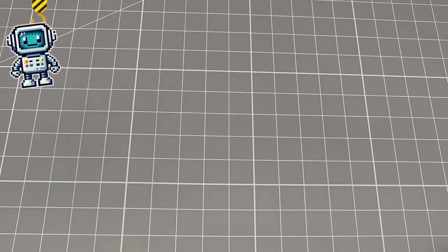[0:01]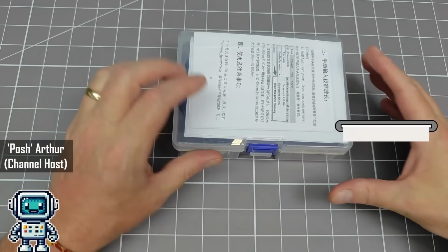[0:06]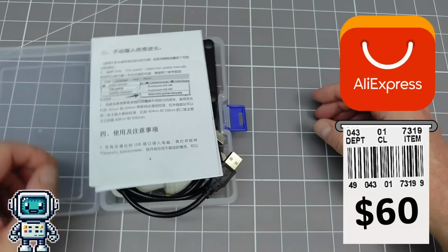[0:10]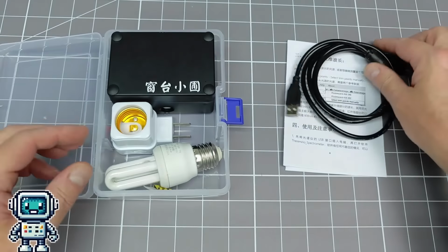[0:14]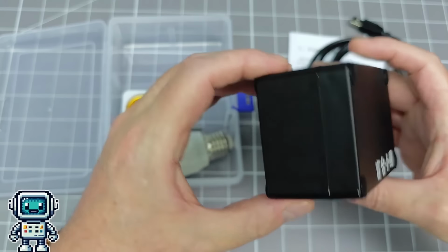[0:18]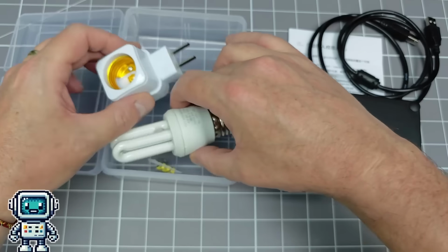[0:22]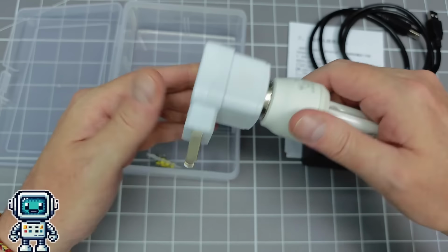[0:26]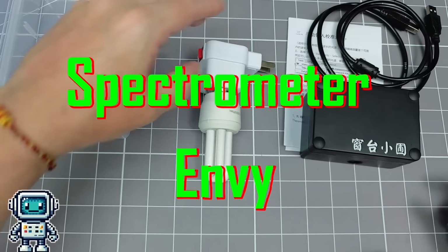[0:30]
This is a $60 optical spectrometer, and is available on AliExpress. We have extensively tested this device, and it can outperform products that cost 10 times as much. But, to be honest, it isn't exactly the most beautiful thing on the planet. And we found ourselves suffering from a certain amount of spectrometer envy.
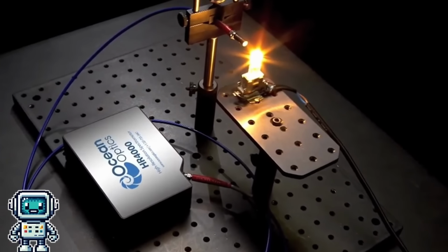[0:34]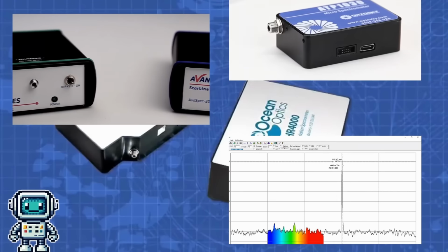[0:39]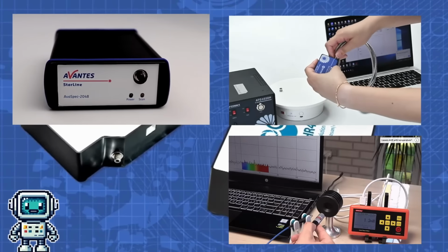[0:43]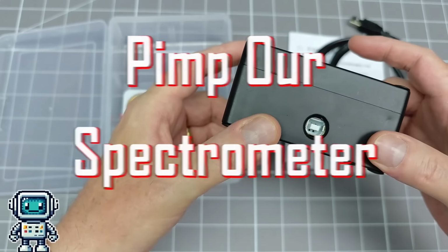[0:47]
We all know it's wrong, but that didn't make us feel any better. So we decided to do something positive about it. Instead of spending a king's ransom to buy a flashy new device, we decided it would be better to pimp our spectrometer. Okay, let's crack on with this.
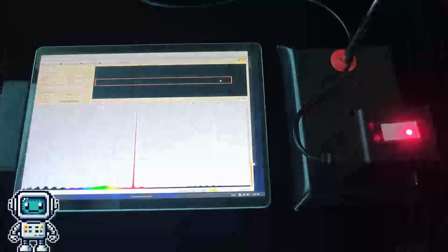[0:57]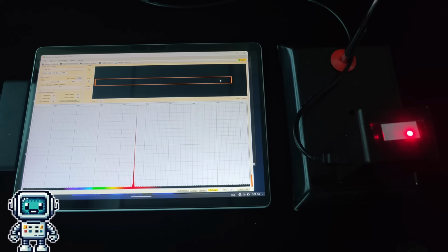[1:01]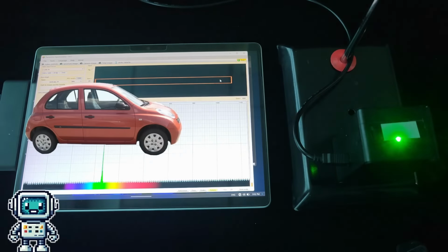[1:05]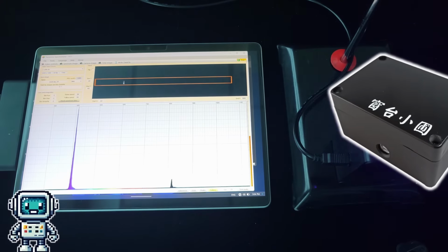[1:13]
The aim here is to try and improve the functionality, and perhaps even the performance of this spectrometer. This is not just a case of putting a supercar body kit onto a Nissan Micra, we actually want to make this device more useful. That said, it really won't hurt to make it look less like a boring old black brick.
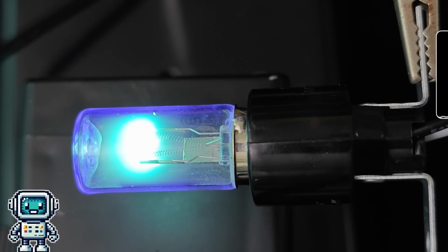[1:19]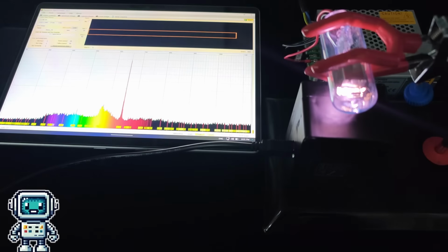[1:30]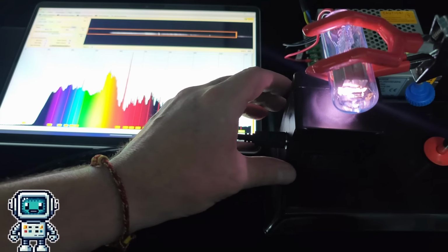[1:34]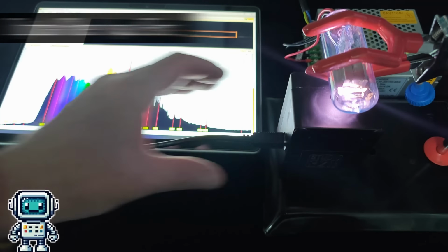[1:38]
If you have not already done so, we suggest that you watch the previous videos we made about this super cheap spectrometer. There is a lot of information in those that will help to make this video make more sense. First, let's start with adding an optical fiber input port.
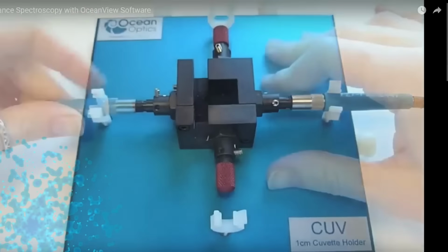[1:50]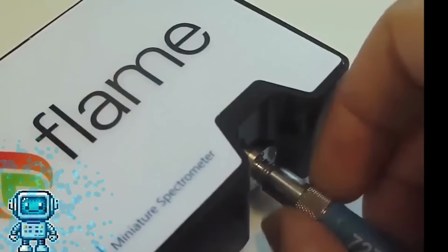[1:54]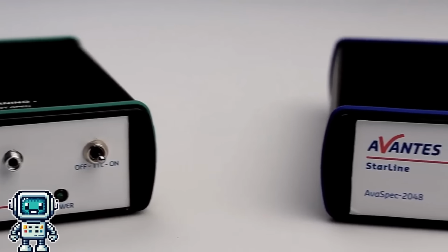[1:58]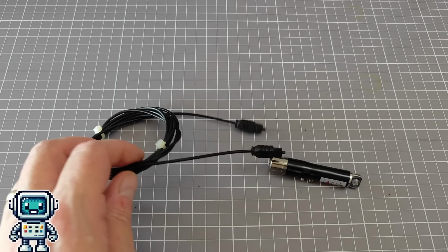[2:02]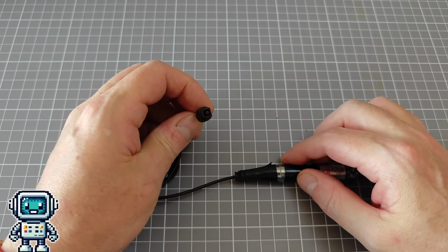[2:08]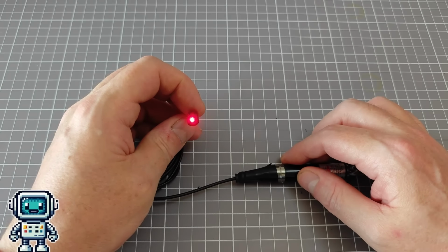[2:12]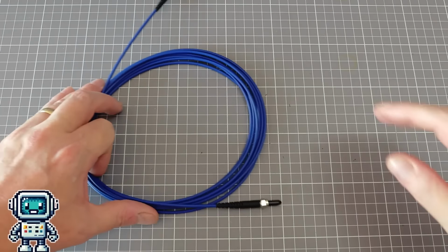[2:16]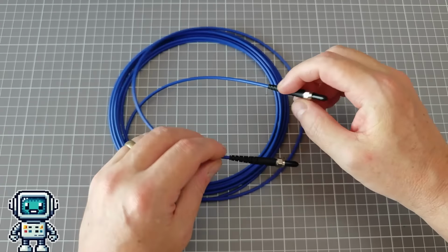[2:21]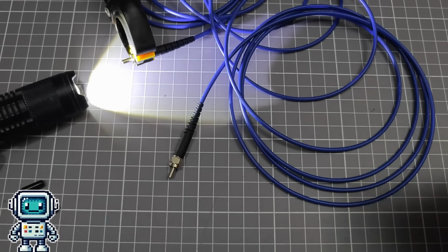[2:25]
Usually, small professional spectrometers use an optical fiber input. This means that you don't need to move the entire spectrometer to the source of light you want to measure. Here, you can see how this low-power laser beam is carried down this cheap light pipe, a type that is used for digital audio. For spectroscopy, we need to use higher quality optical fibers, ones that can handle the wide bandwidth of the instrument, such as this one.
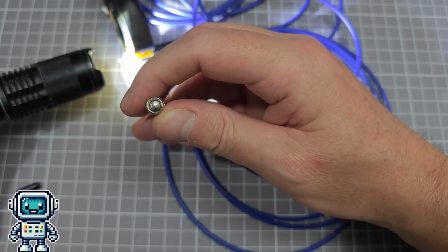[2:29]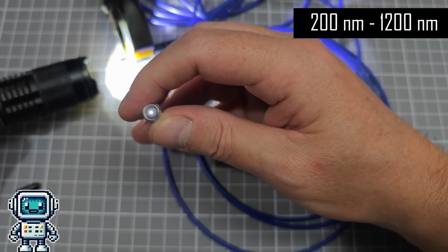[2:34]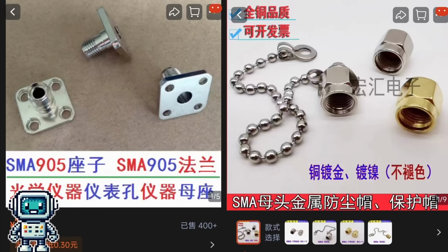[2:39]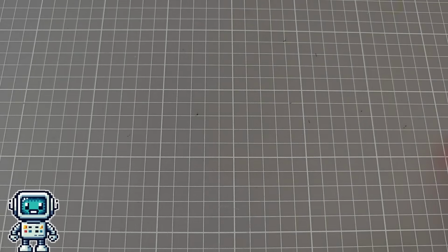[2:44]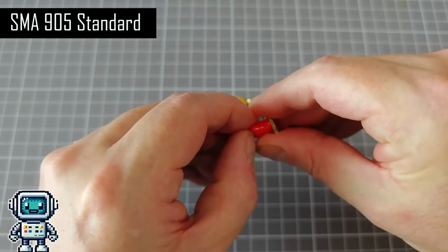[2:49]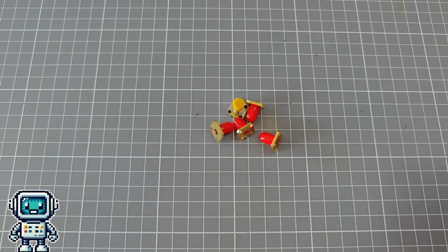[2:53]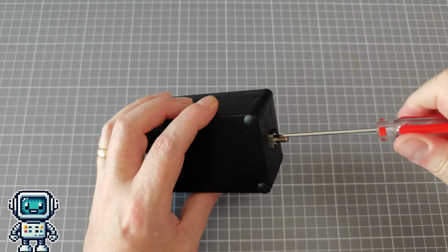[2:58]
This was actually the most expensive component we purchased for this project, and it has a usable bandwidth of 200 to 1200 nanometers. We also bought some special receptacles to allow the fiber optics to be connected to our spectrometer. We are using the SMA905 standard for this, it seems to be the most common interconnection standard used for this application. Fitting one of these connectors to the front of the spectrometer could not be easier, just drill four small holes, and then screw it to the enclosure.
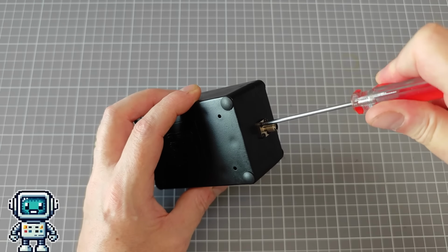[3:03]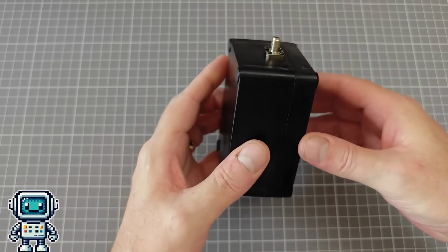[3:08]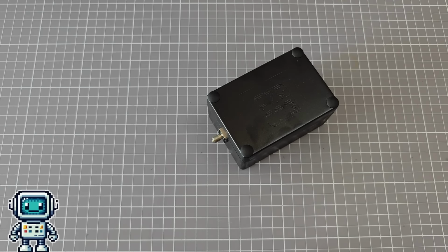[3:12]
We are not going to delve into this too deeply, because later we made a change to the actual enclosure, so let's park this here, and move on to the next upgrade we made.
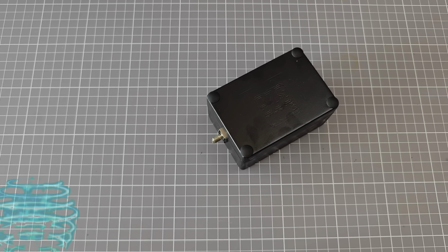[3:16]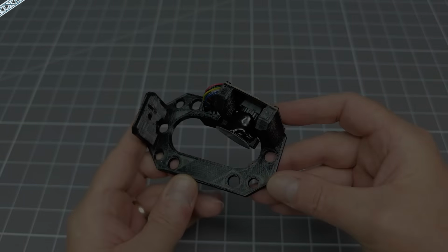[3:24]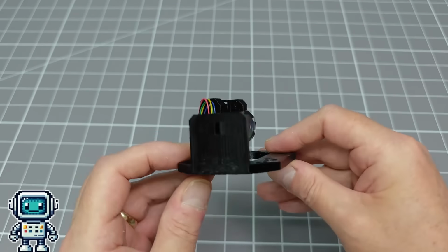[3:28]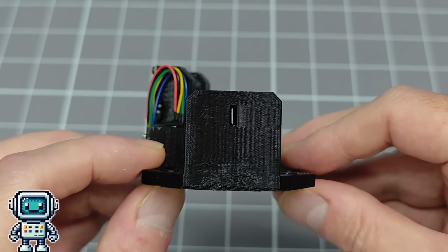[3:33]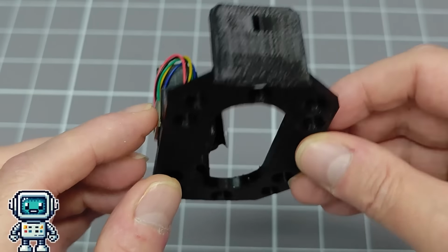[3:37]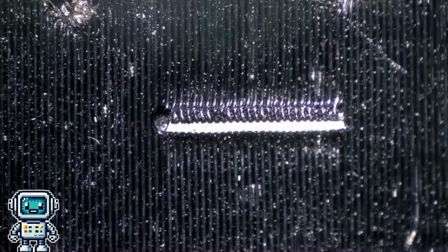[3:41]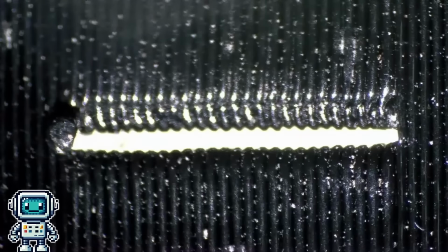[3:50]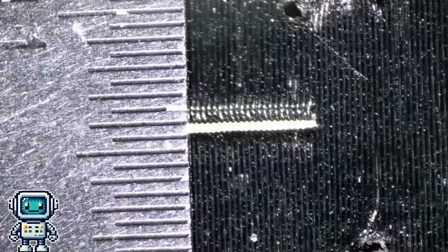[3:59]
Almost all spectrometers need to have an optical slit. In this case, it is 3D printed into the chassis of the spectrometer itself. If we zoom in on the optical slit with a microscope, we can see that there is quite a lot of unevenness due to the basic properties of the 3D printing process. This optical slit width can determine the optical bandwidth of the spectrometer, at least, it can, until you hit the limits imposed by the inherent point spread function.
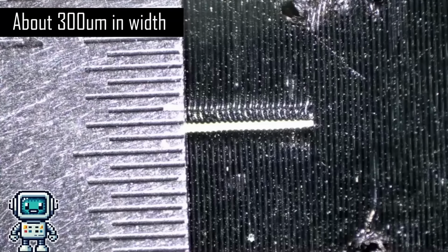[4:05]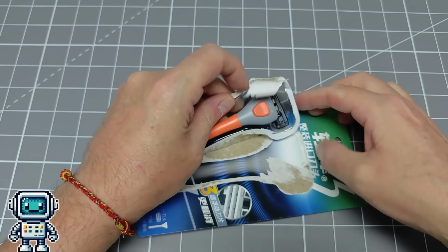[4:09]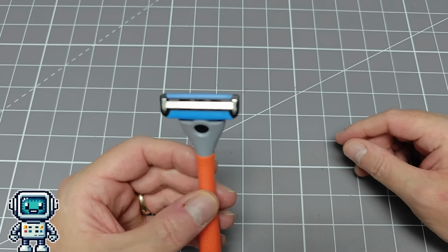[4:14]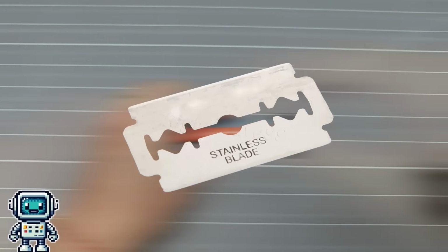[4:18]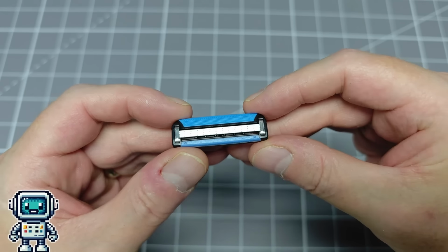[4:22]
The 3D printed optical slit is about 300 microns in width, so we wanted to make something that was a little narrower, and with straighter edges. Normally, this can be done with a pair of razor blade edges. We can't buy those types of old-fashioned razor blades here in China, so we thought we would try using the blades from a disposable razor.
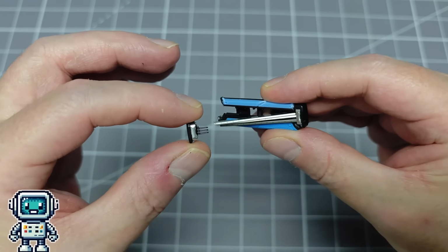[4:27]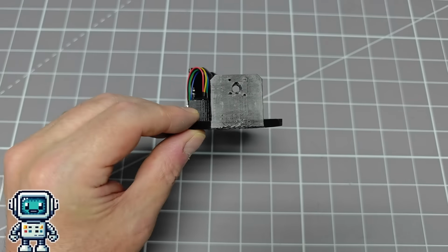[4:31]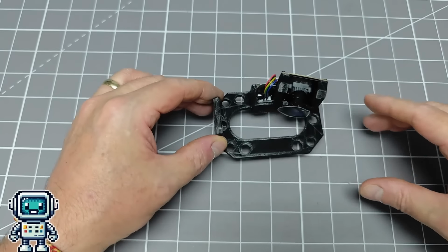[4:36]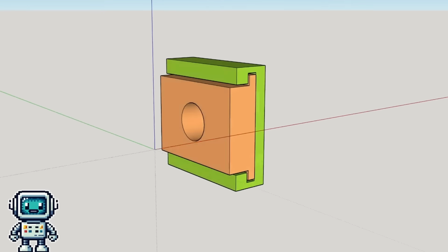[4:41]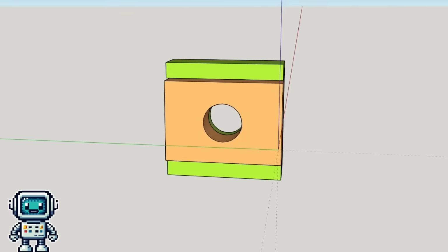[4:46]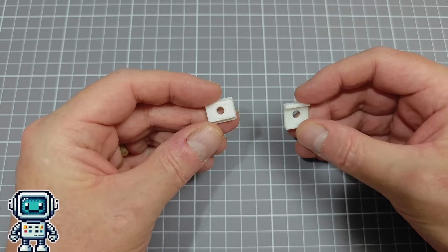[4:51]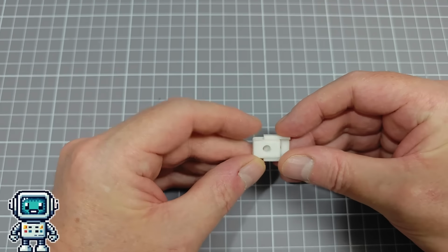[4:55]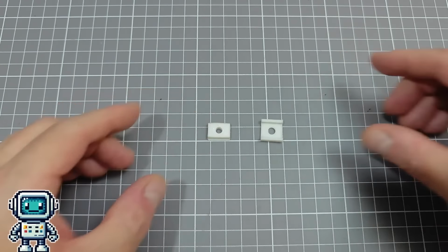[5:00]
So, after removing the blades from the razor, we got on and drilled out the old 3D printed slit. We figured that we would make a special slit holder to allow it to be correctly aligned after assembly. The green part is permanently attached to the spectrometer chassis, and the orange part has the custom slit attached to it. In this way, the alignment can be adjusted. We have read that when using optical fiber inputs, the optical slit is often unnecessary, and this arrangement allows it to be removed altogether.
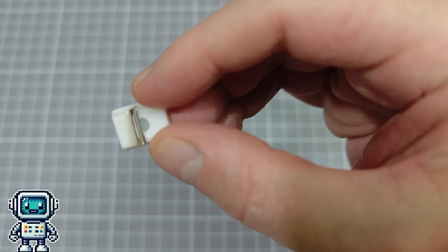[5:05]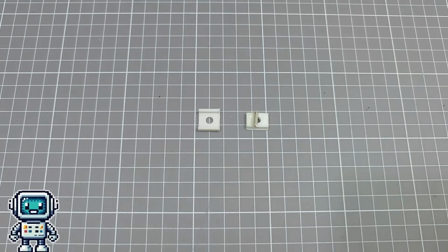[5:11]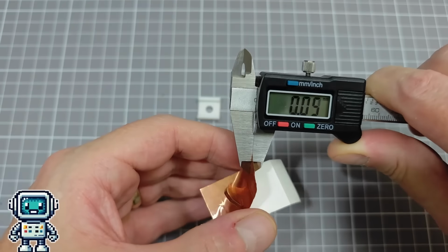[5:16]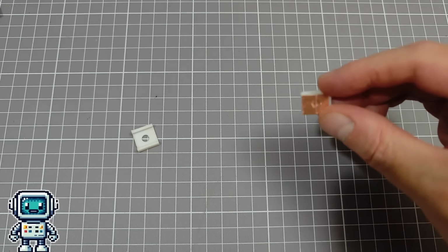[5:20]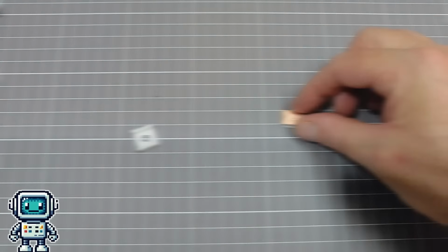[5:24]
It was at about this point that we realized that we had screwed up. Disposable razor blades were never going to work, and actually, there was a far easier way to do this. So, we have used 50 micron copper foil to create the optical slit. It has a self-adhesive backing and is really easy to fit. The new slit is about 200 microns in width, and although the edges are not perfect, it is better than the original 3D printed version.
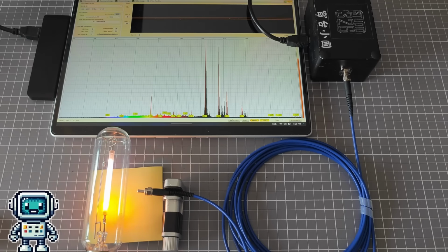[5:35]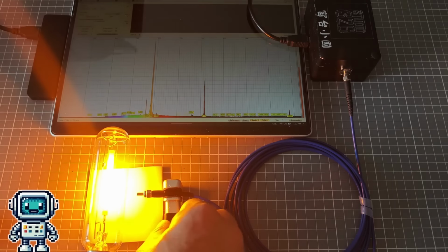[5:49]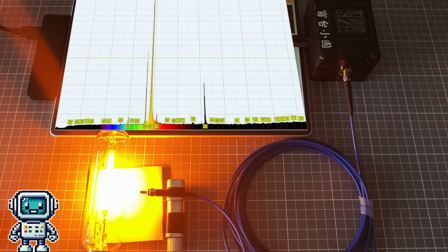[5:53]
We decided to test this upgrade with our sodium lamp, as a test source. We wanted to see if there was any improvement in resolution of the spectrometer using this new optical slit. We have made measurements on this lamp many times before, using this spectrometer. So we have lots of data to compare with.
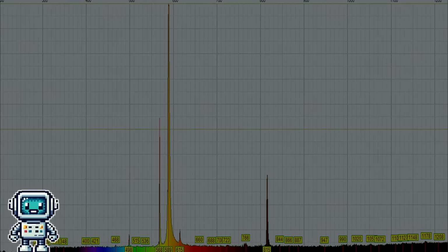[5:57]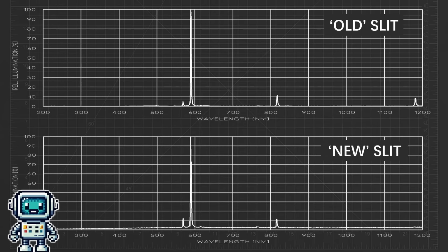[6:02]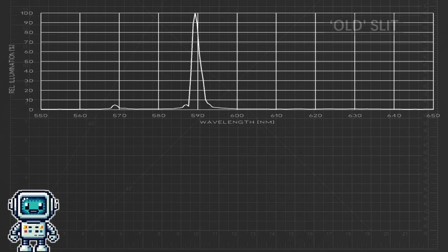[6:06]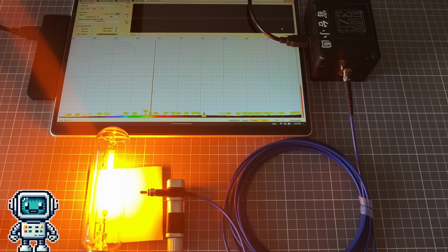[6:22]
If we look at the spectral data from the old slit and the new one, we cannot really discern any noticeable difference. But if we zoom in on the two sets of data, in the new graph, we can see a slight dip in the sodium peak. Perhaps this is just an artifact of something, or perhaps we are starting to see the sodium double line being resolved. Anyway, we are pretty confident at this stage, but we have not made the resolution any worse, so we will count that as a success in itself.
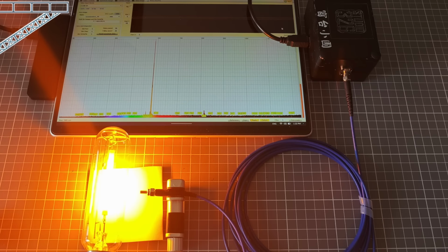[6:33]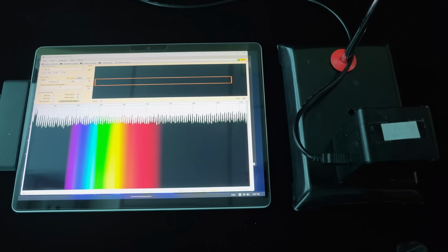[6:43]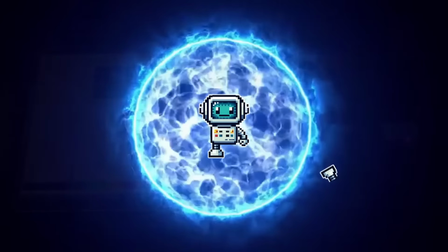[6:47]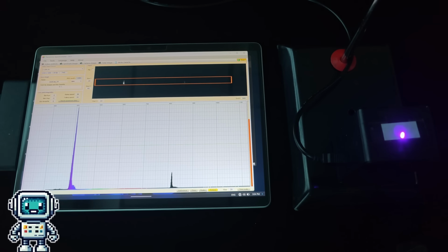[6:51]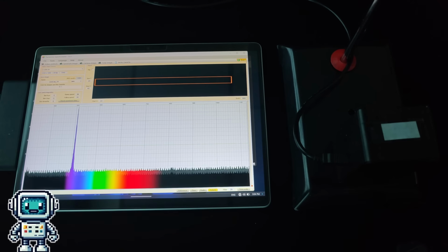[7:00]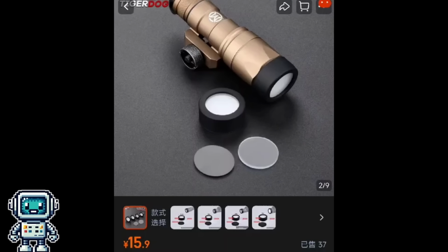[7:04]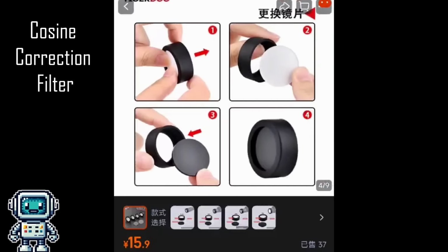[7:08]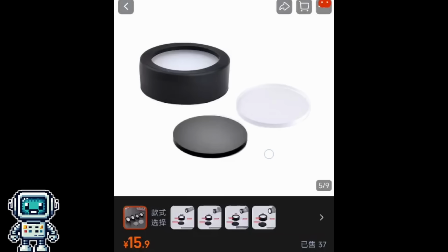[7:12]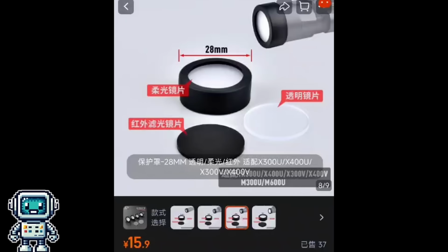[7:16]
One of the problems with measuring bright, or collimated sources such as lasers, is that they can generate many reflections within the spectrometer, and cause measurements to fail. The way to avoid this situation is to employ a cosine correction filter. This is just an overly complicated way to describe a simple diffusing layer. We found this one on Taobao for around $2. It even came with an infrared filter.
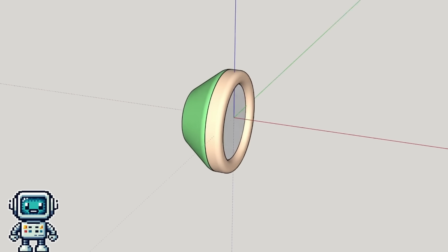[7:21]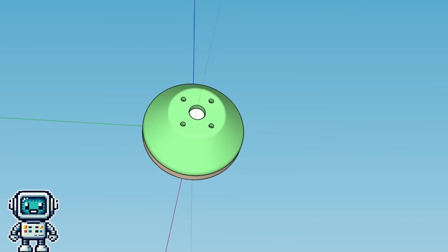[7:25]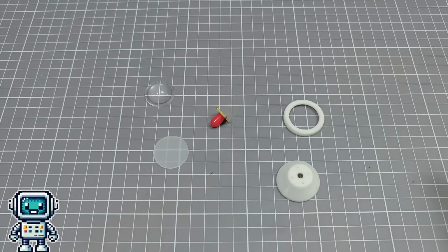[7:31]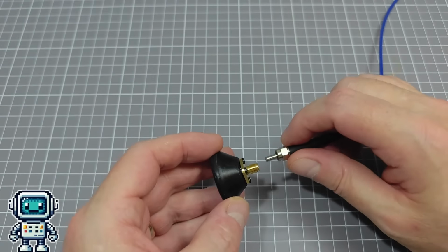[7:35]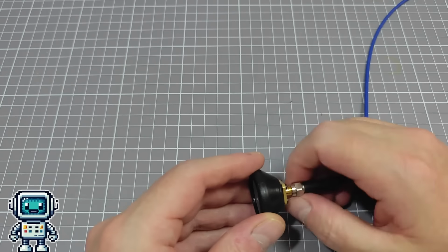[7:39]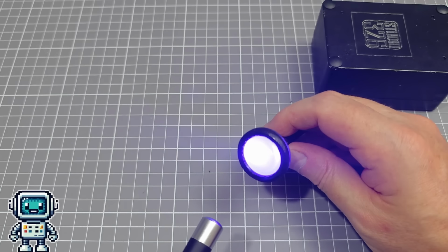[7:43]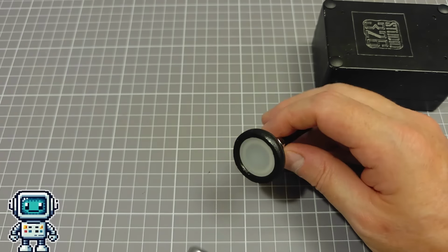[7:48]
So, we designed a simple holder for the diffusion filter, that allows it to interface to an SMA905 fiber optic connector. After printing it out, all we need to do is to paint and assemble the adapter. So, now we have our very first fiber optic spectrometer accessory. This one is ideal for measuring strong visible sources like lasers or bright lamps.
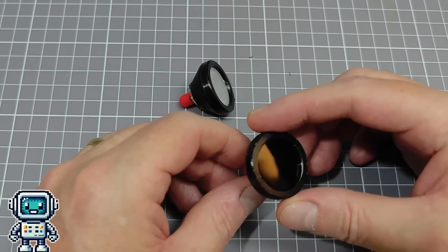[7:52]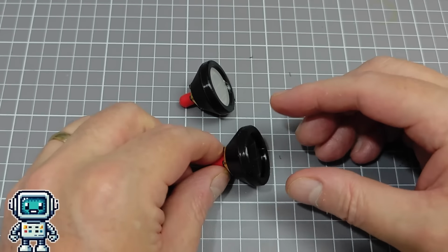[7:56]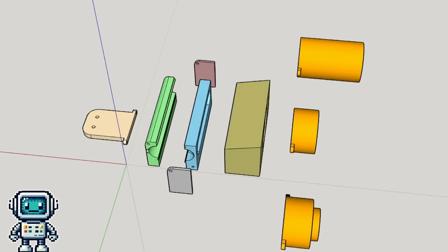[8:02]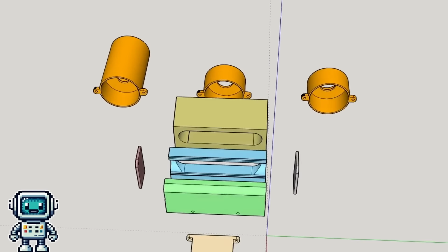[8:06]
As well as the visible light diffuser adapter, we also took advantage of the additional infrared filter, and built another one that was for the infrared part of the spectrum. I suspect that in the future, we will take advantage of this when we build test fixtures for other optical experiments.
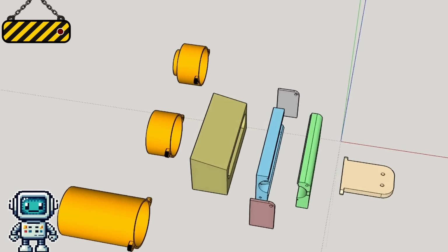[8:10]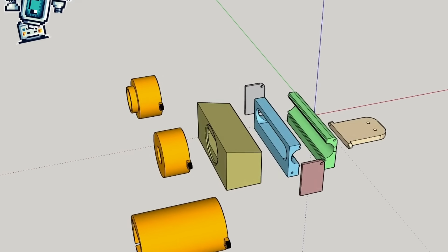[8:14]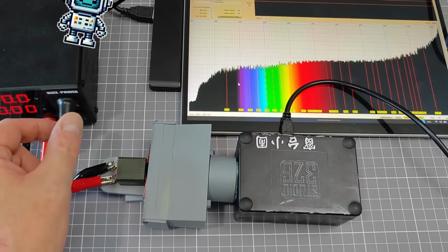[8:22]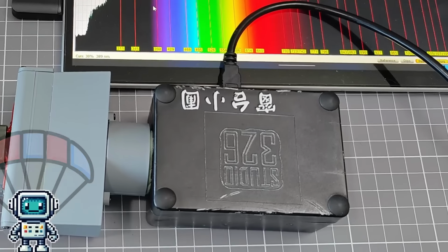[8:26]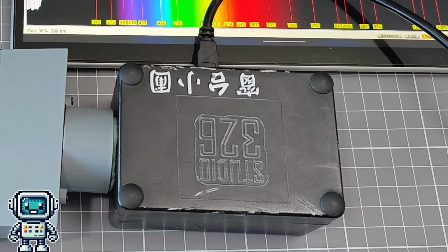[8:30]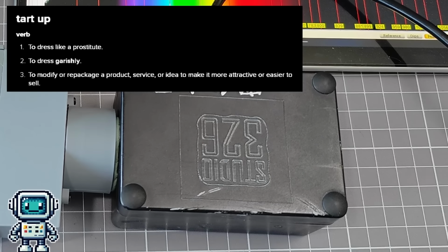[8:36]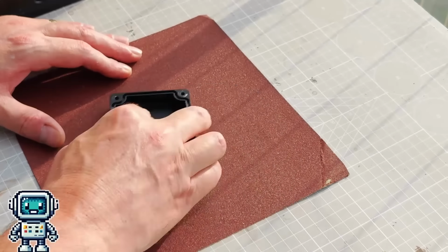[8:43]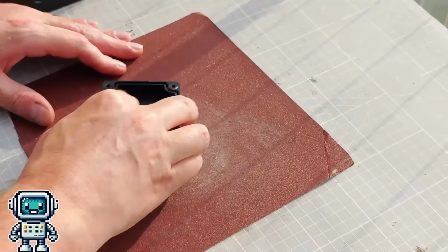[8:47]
This spectrometer has seen a lot of use, and is now looking a bit battered and bruised. So, we figured it was time to tart it up. Basically, we are going to give it a makeover. The plan was simple: remove the peeling paint of the case with a good dose of sandpaper, and then give the enclosure a new coat of paint.
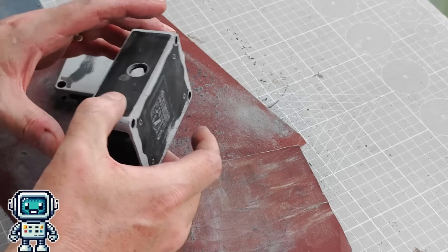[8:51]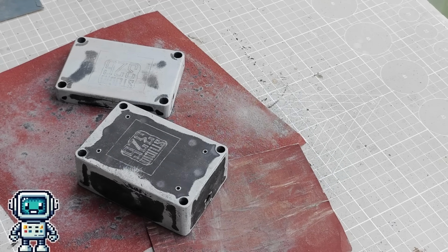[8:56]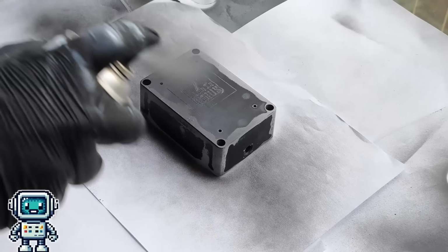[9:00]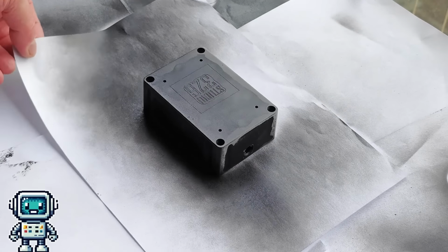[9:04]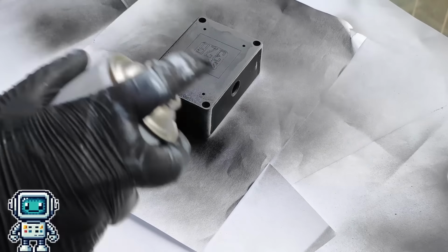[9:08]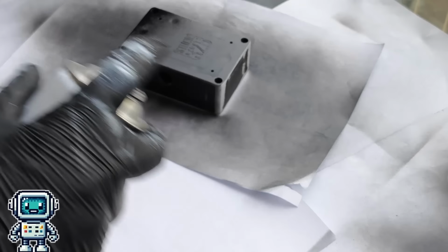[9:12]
There are a lot of steps we basically didn't bother with. But, this isn't an arts and craft channel. If anyone is thinking about writing comments, to let us know what type of primer we should have used, or that our spray painting technique is not correct, well please don't waste your time. We are genuinely not interested in learning more about the art of watching paint dry.
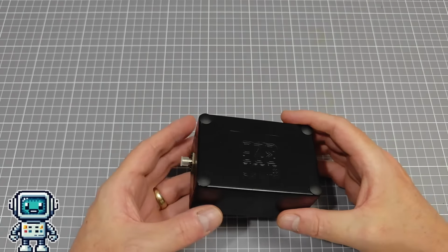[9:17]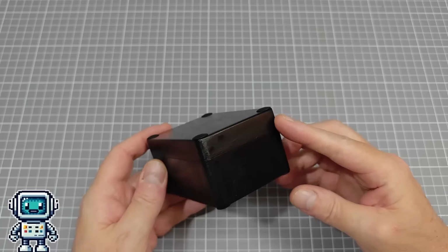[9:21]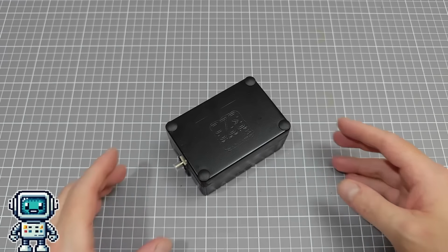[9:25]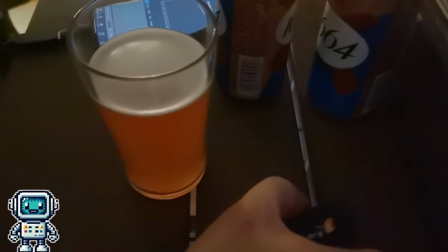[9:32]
When the case was finished, the results were pretty disappointing. It might have a new coat of paint, but it is still a dull old black brick. Frankly, it wasn't giving us a boner, so we were going to have to do some more work. We want this to be a pub-grade spectrometer.
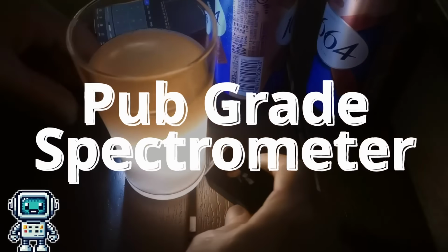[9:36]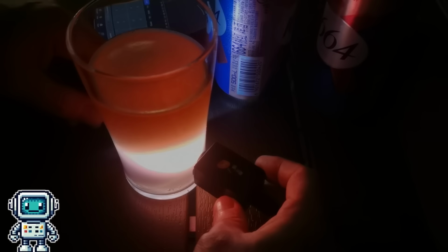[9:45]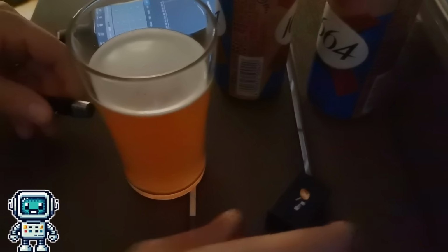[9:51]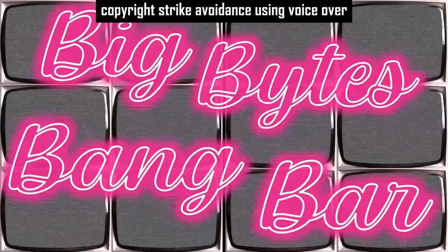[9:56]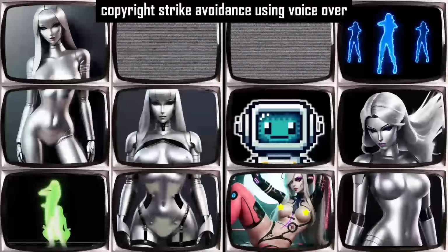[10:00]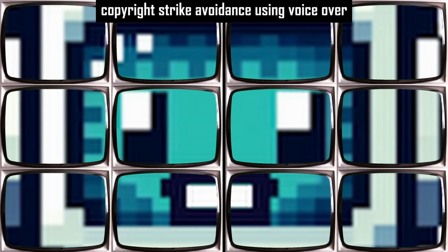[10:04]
As all engineers know, when you are down the local boozer, girls are very impressed by a guy with a cool-looking spectrometer. Well, at least they are in my favorite bar. The girls use them to check for counterfeit bills. This is my favorite bar, here the girls like guys with cool-looking spectrometers. Obviously, a wallet full of cash helps out too.
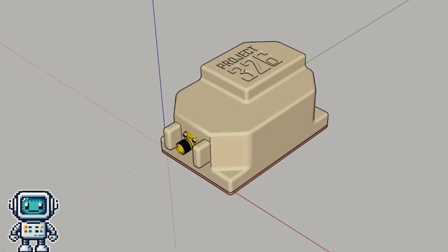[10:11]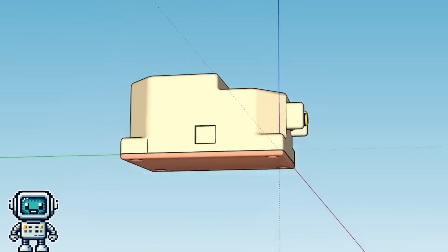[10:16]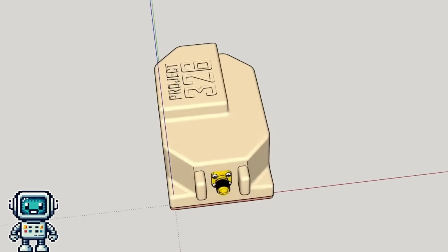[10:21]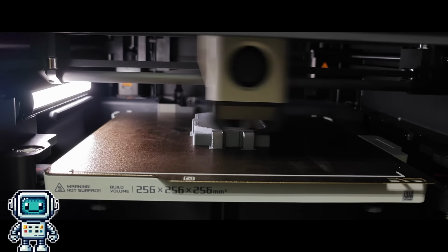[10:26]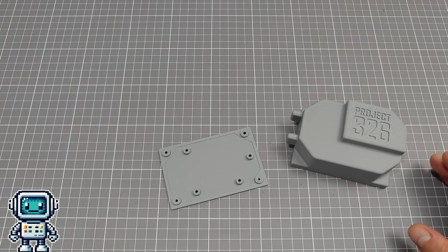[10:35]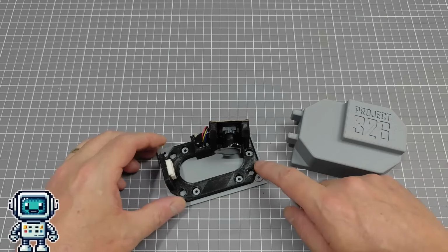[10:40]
Anyway, back to the task in hand. We designed a nice new case for this spectrometer that is 100% pub grade. Frankly, we should have done this right from the get-go, but better late than never. We tried printing this out on a few different 3D printers, but as usual, the Bambu Lab machine produced the best results. We removed the entire chassis from the little garden spectrometer. It was just a much simpler way to handle this process.
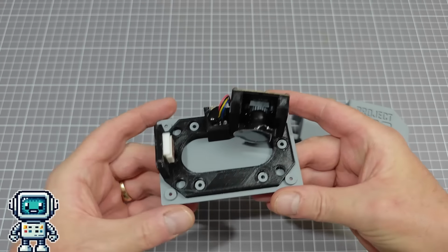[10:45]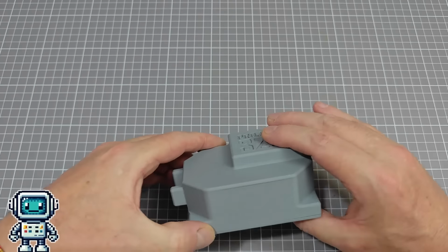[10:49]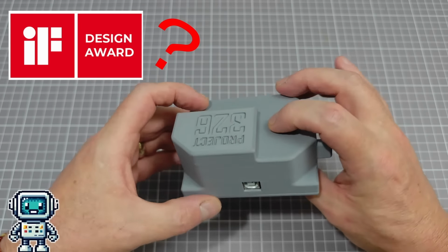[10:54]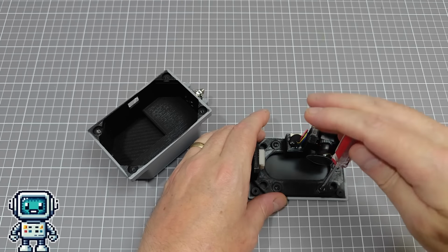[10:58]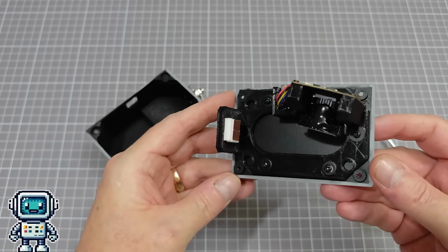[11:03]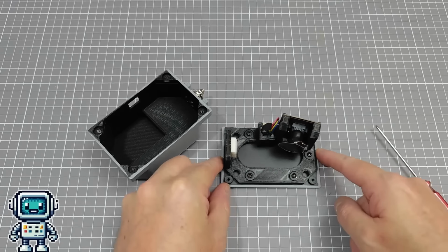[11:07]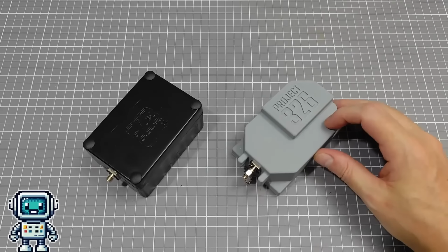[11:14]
Everything fitted together wonderfully, which to be honest, is rather unusual on this channel. It isn't exactly the most beautiful piece of industrial design ever created, but it is far better than the original enclosure. We sprayed the inside of the case black, to cut down on internal reflections. And with the addition of the new optical slit assembly, and the SMA connector, the thing is basically ready. Comparing with the original, there isn't really much more to say.
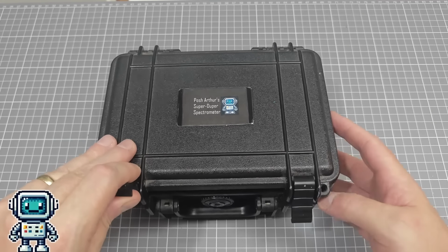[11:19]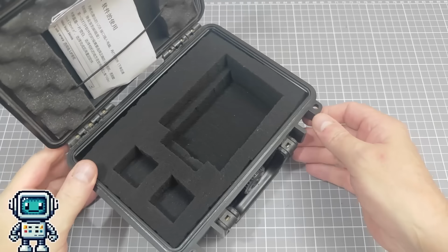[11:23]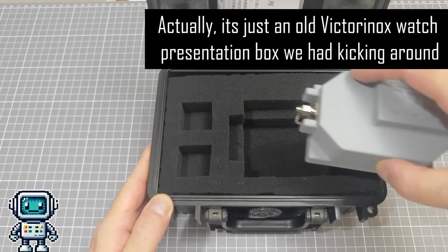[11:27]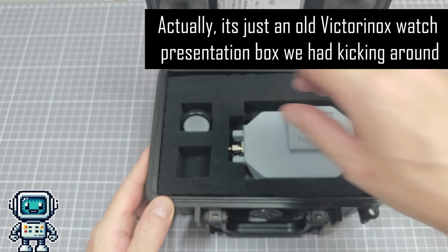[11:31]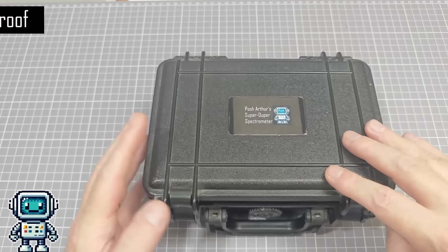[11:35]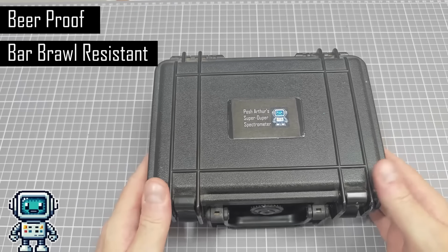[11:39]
Just to make sure that this upgraded spectrometer gets fully qualified as being officially pub grade, we got a nice instrument case for it. The foam was cut to accommodate the spectrometer and the accessories. And when the case is closed, it is both beer proof and bar brawl resistant, though we plan on doing some further testing on those particular claims.
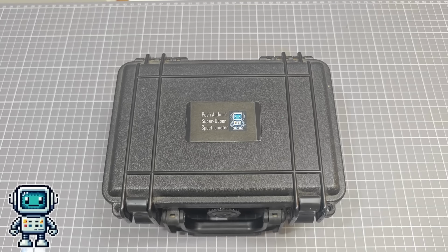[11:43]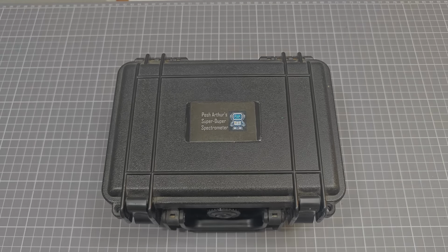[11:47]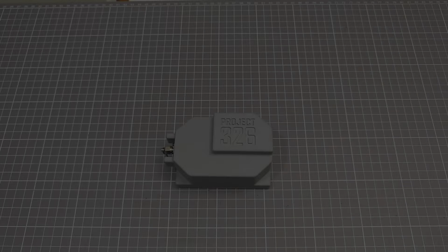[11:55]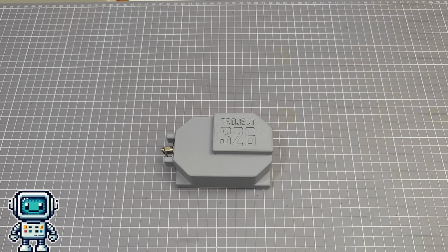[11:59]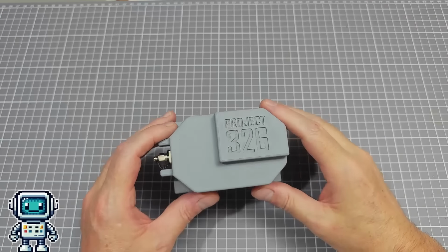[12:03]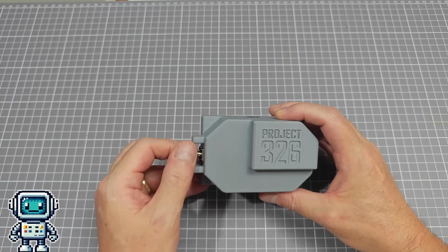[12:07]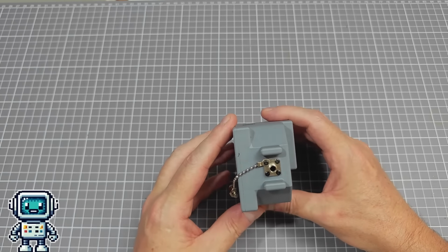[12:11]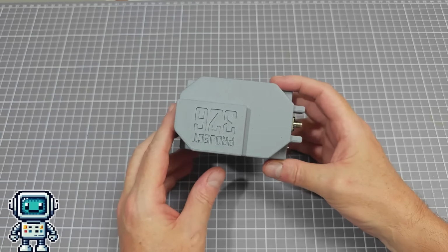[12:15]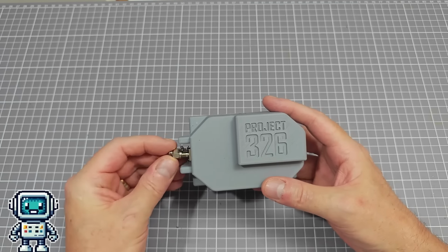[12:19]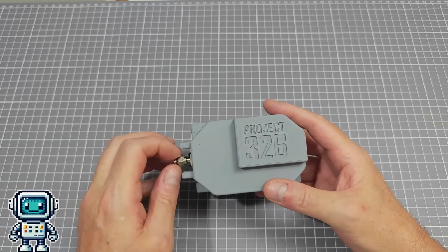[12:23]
So, now we have a super cheap spectrometer, but which has an optical fiber input port. However, that doesn't mean that it can no longer be used for direct measurements. It functions perfectly well without any optical fiber attached. The SMA connector does restrict the field of view, essentially collimating the incoming light, but that's probably a good thing.
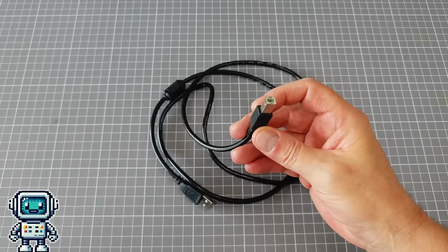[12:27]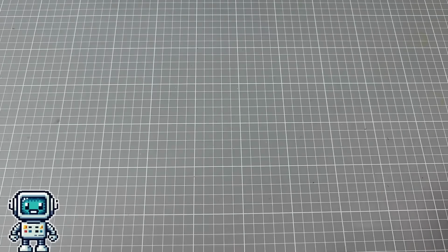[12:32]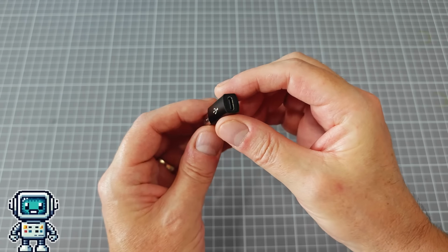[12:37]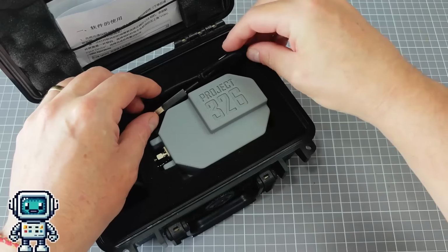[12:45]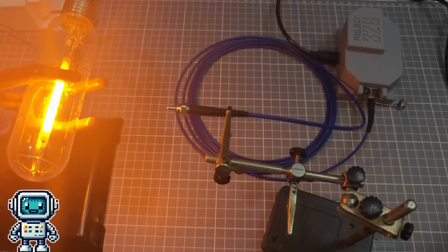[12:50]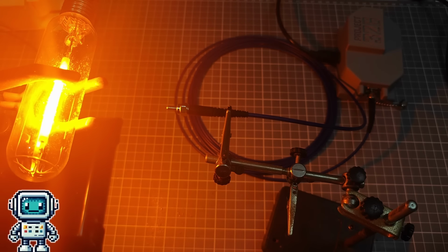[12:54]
As further improvement to this device, we are going to change the cable. Type B cables, such as the one supplied, are horribly thick and cumbersome. We found a Type B to Type C adapter, and used it with a nicer USB cable to create an acceptable solution. It even fits into our beer-proof case. The only real downside to making these changes, is that the overall sensitivity of the spectrometer will be reduced. And the only risks involved, are the replacement costs of a cheap spectrometer.
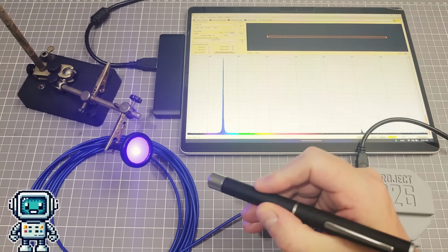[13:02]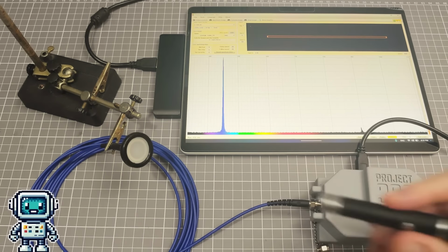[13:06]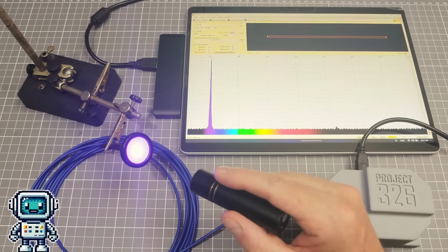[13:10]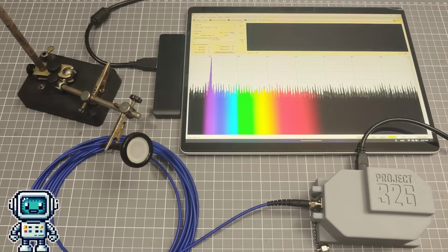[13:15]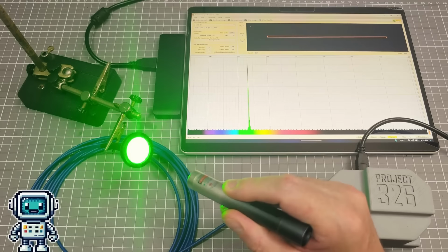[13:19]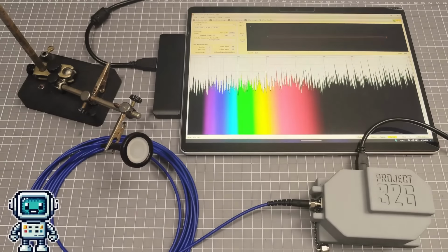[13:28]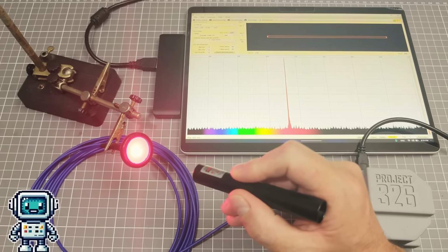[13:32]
If you are going to try and do this change for yourself, then have fun, but don't come crying to us if you screw it up. The only really irreversible change is drilling out the optical slit, which is easily replaced with the solution we have shown. The option of adding more accessories later, is the main reason we made this upgrade. Repeatability between experiments is very helpful. Obviously, it doesn't hurt to beautify the device a little, but don't expect it to get you laid.